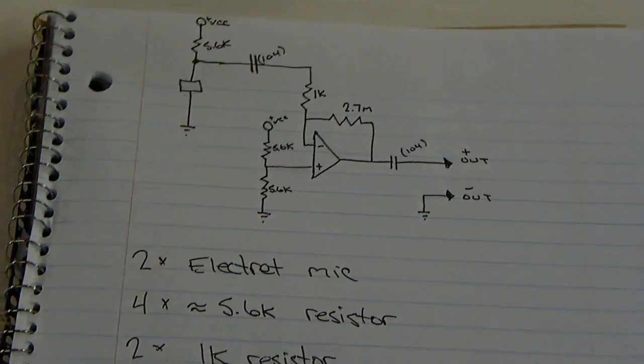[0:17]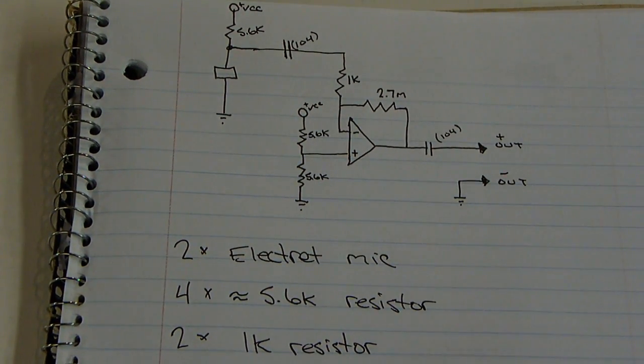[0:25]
Alright, today I'm going to be making a device that I call Stereo Super Ears. This basically is just a device that allows you to hear things that you normally wouldn't hear. This is the schematic, if I can run over it quickly. This is just one half, but the actual device is going to be this times two, since it's stereo.
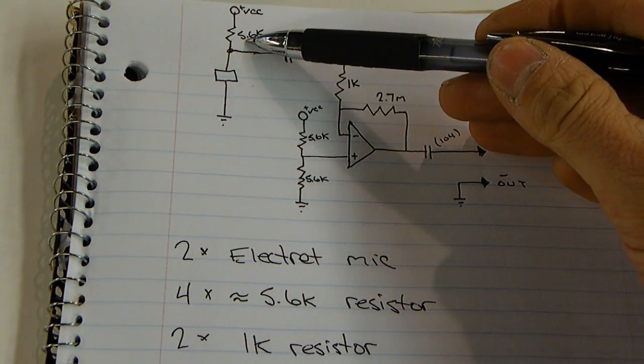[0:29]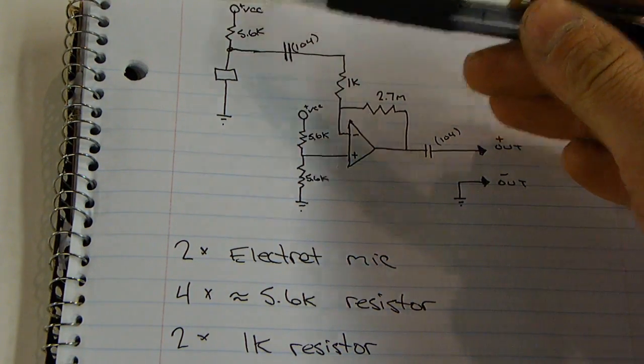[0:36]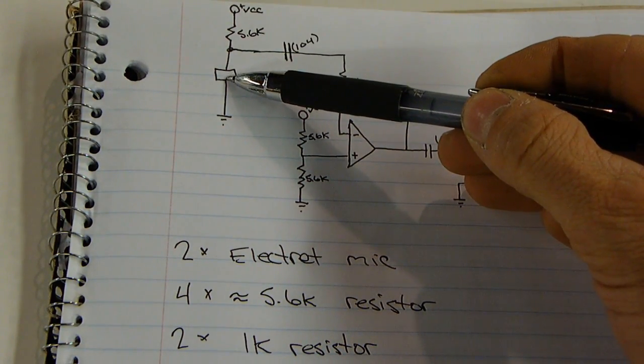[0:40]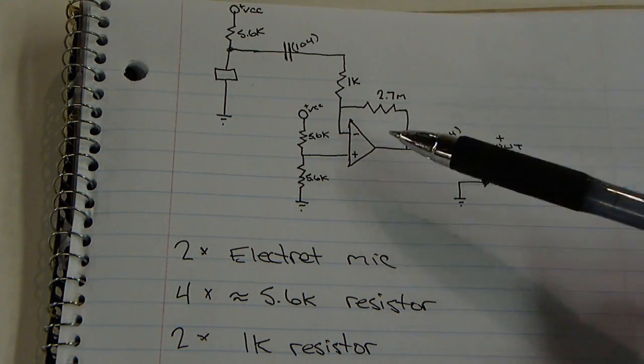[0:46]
Here's how it works. I have a 5.6K resistor. Anytime you see this plus VCC, that means connect to the positive of the battery. That biases this electret mic right here, which goes through this capacitor to filter out any DC. Then it leads to this op amp. The op amp's amplification is determined by this 1K resistor and this 2.7 meg resistor.
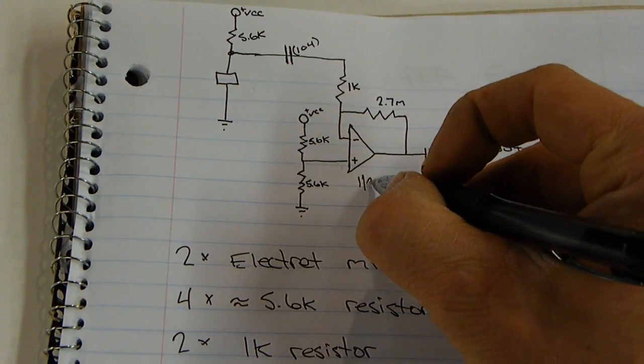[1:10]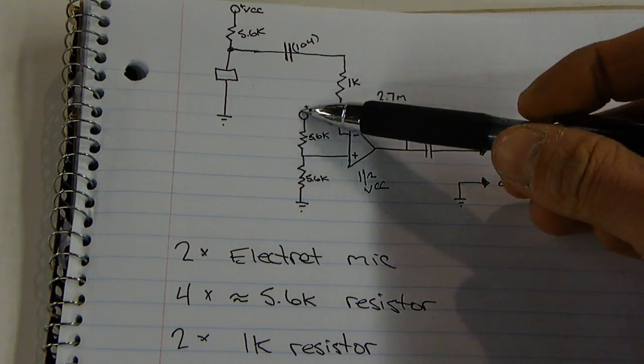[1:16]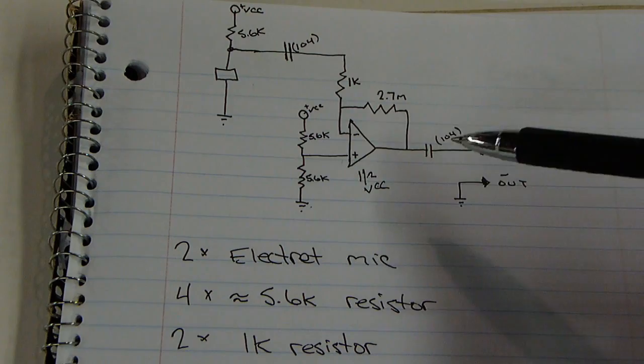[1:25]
This over here is a voltage divider connected to the op amp to give a reference for half the voltage. This coming in here is actually 1/2 VCC because there's two resistors of the same value connected to the positive and to the negative. The middle is going to be half the voltage. That's going to go into this op amp. Don't worry about what the op amp is right now. Out of the op amp, this is out. It goes through this capacitor, which filters out again any DC and just lets the AC come through, and to the headphones.
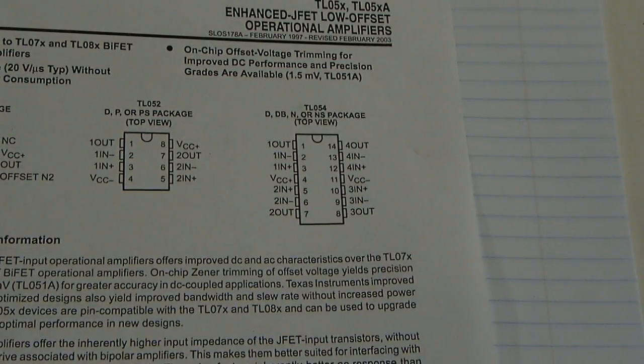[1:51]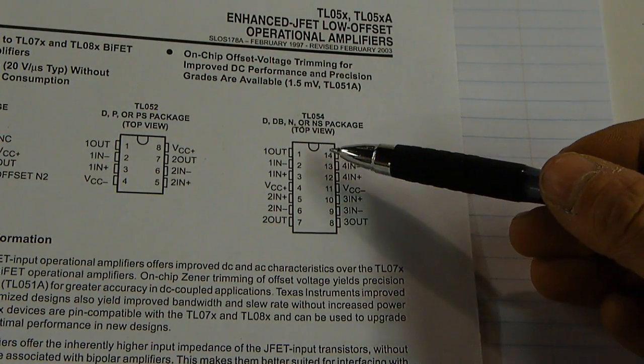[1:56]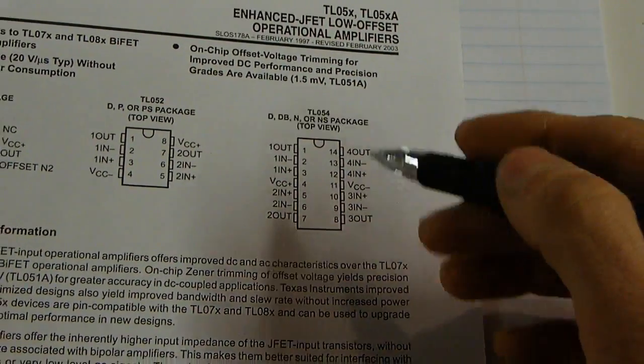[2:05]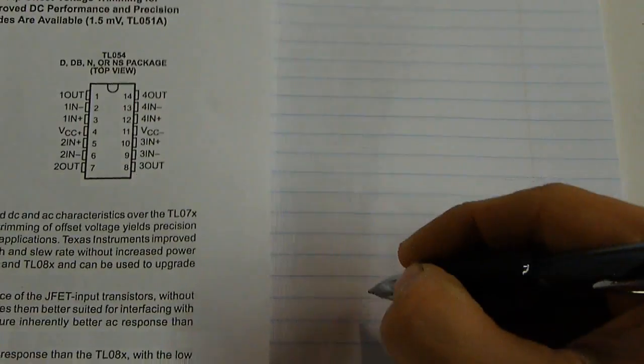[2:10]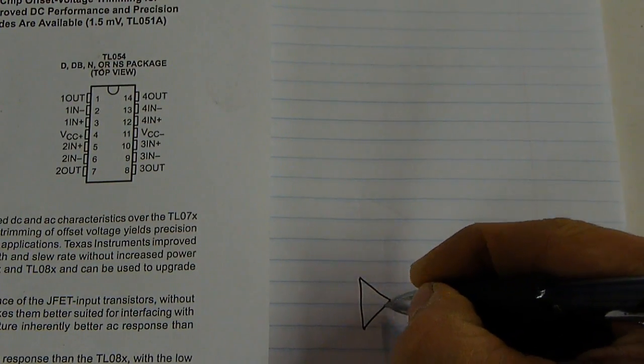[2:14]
Alright, I'd like to talk about the op amp that I'll be using. This is the TL-054, and that's what I have. Any op amp is going to work for you. This isn't one of the most popular ones, but it's the one I have. You'll notice in this particular chip, there's actually four op amps. And one op amp, the symbol for that would be a triangle.
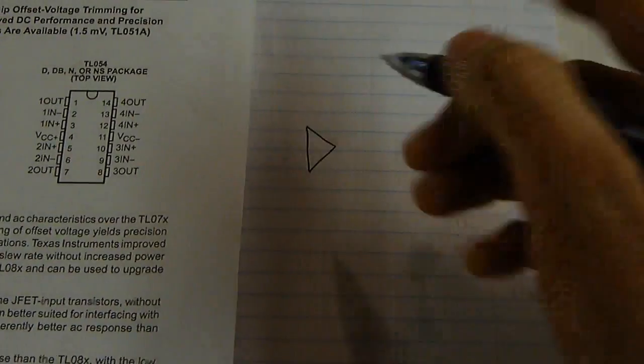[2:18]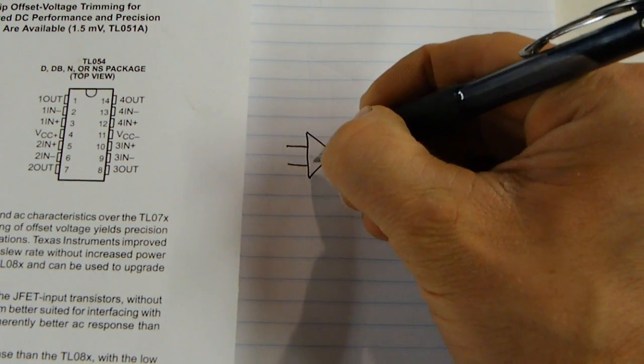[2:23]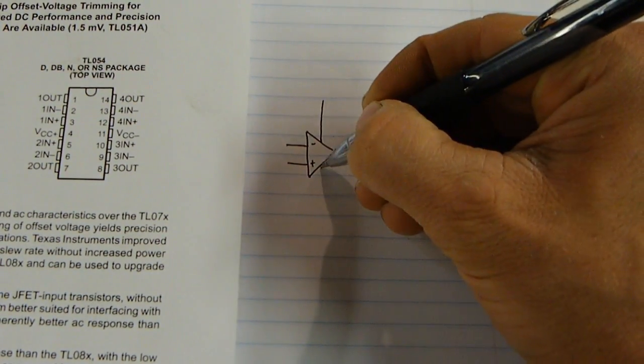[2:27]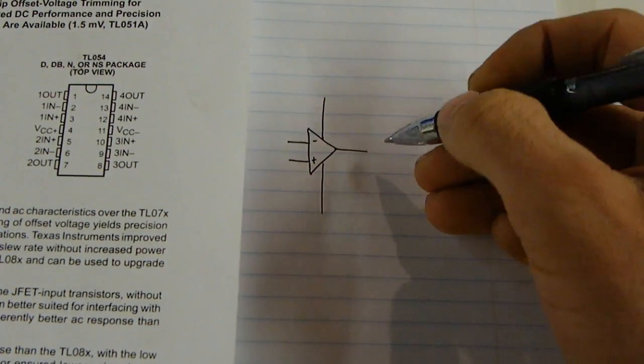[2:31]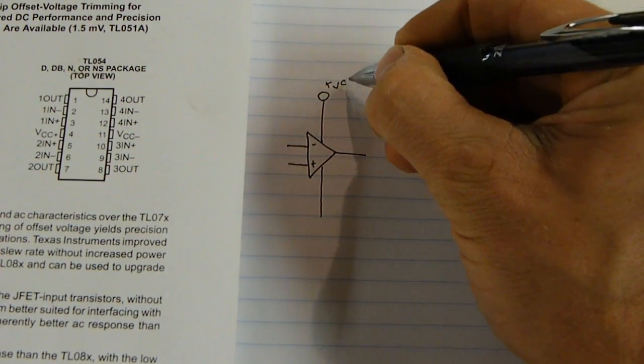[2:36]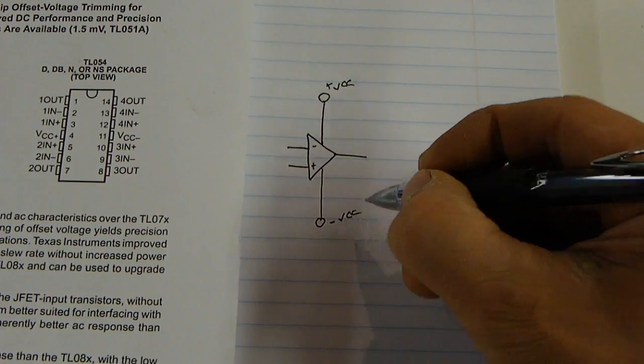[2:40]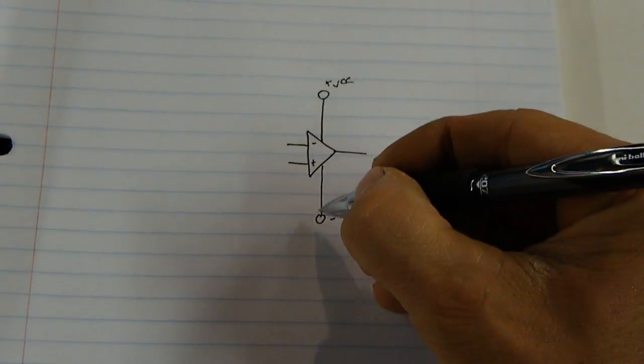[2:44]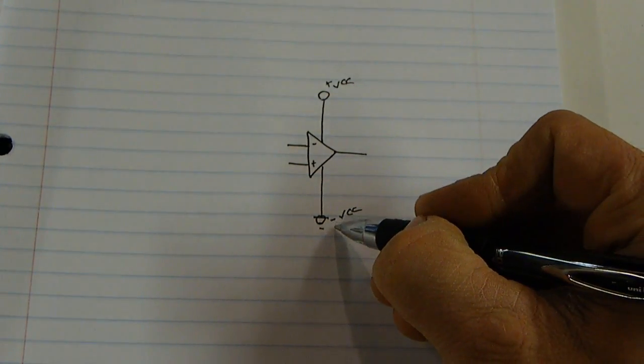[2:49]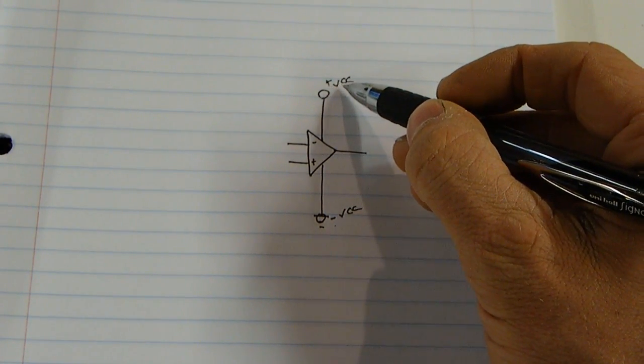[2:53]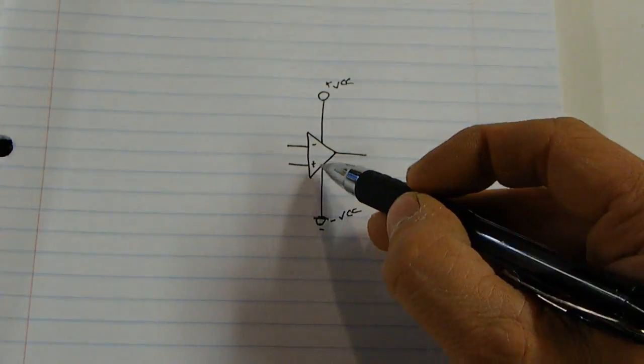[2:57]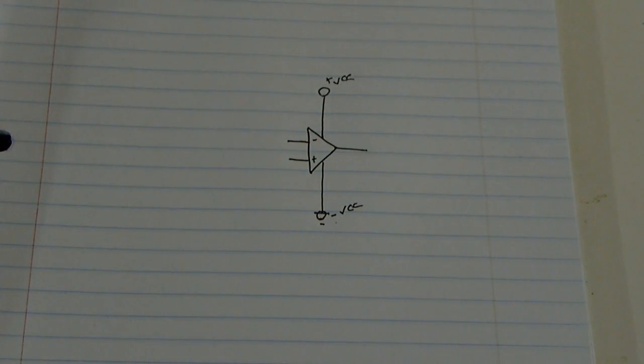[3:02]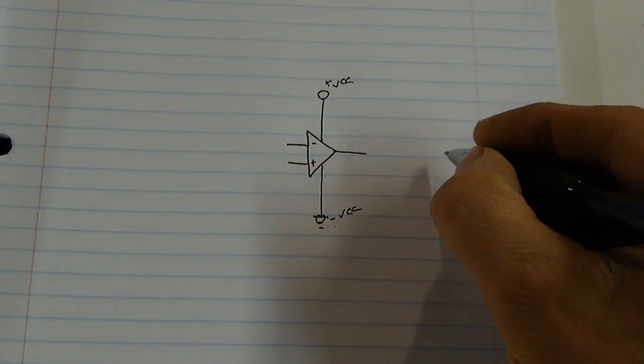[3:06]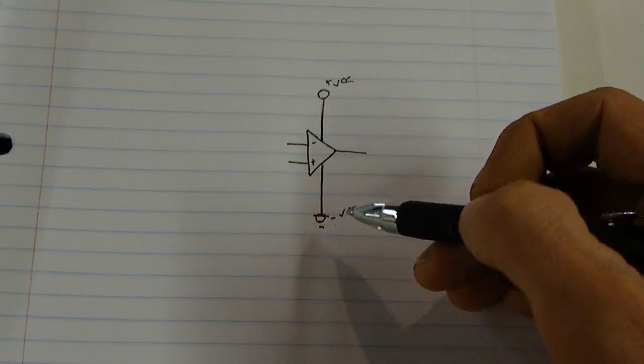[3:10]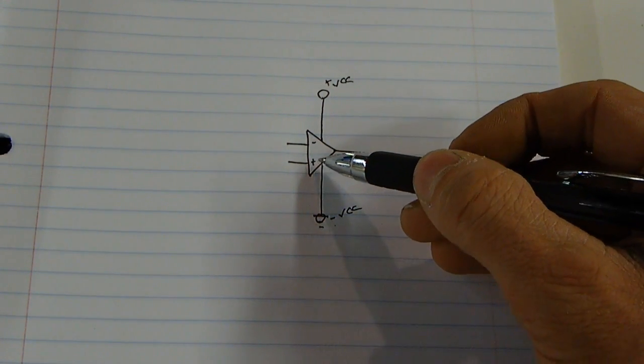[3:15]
Normally, if you're looking at a schematic, you would see something similar to this, something like that, and an output. Output is always this one right here. This one is usually plus VCC, and this is usually minus VCC. However, the way I have mine set up is I'm using a ground here, so this will be connected directly to the negative terminal of the battery, and this is connected directly to the positive terminal of the battery. And the voltage divider across this positive input here allows me to use just a single voltage supply. Normally, there would be a ground and a plus and a minus. But in this case, since I'm using a voltage divider on the positive leg of the input, you need not worry about it. It allows you to use an op amp off of a single power supply source.
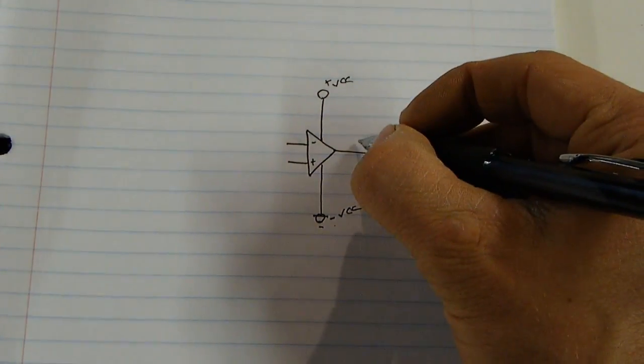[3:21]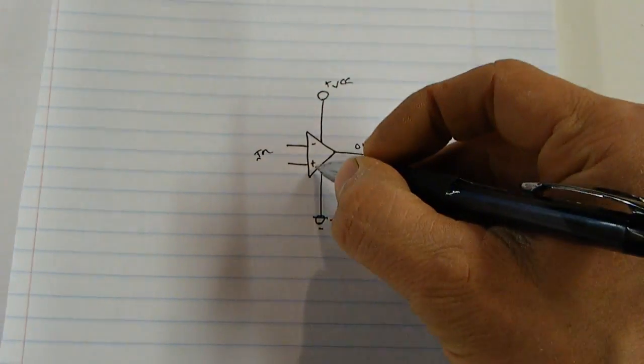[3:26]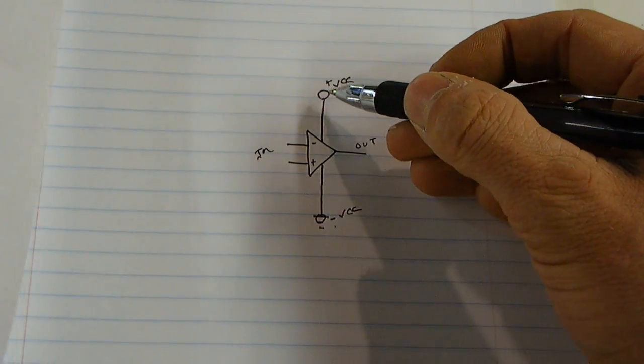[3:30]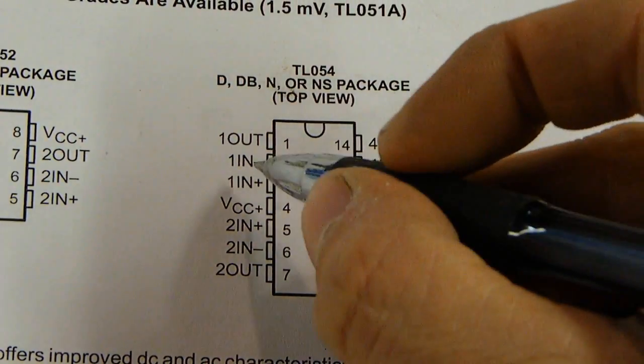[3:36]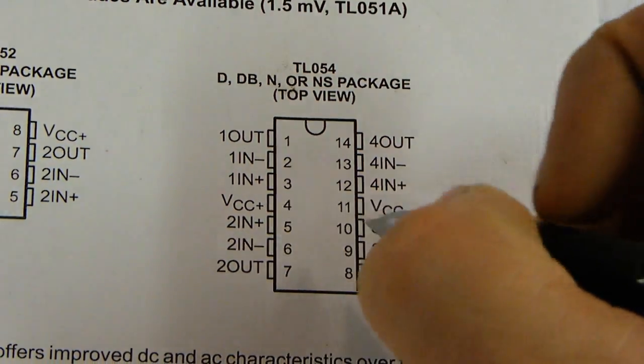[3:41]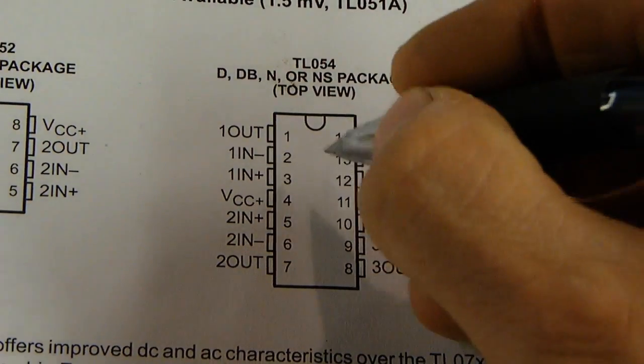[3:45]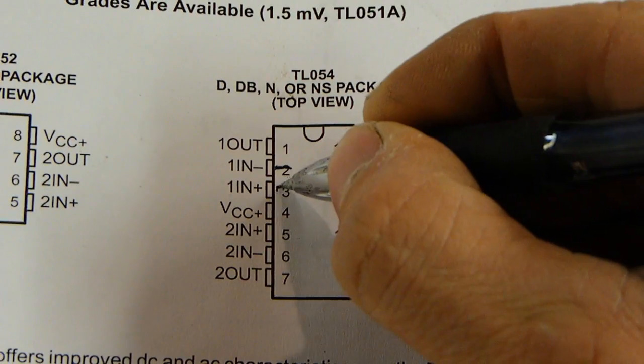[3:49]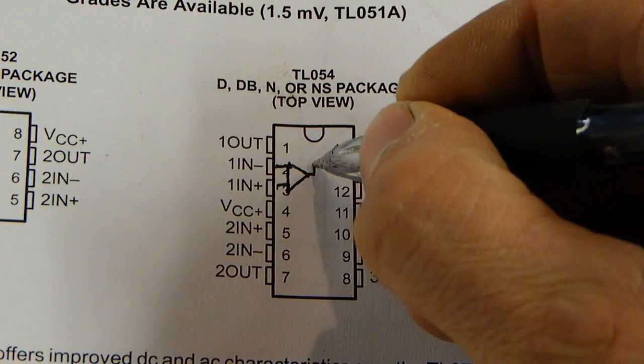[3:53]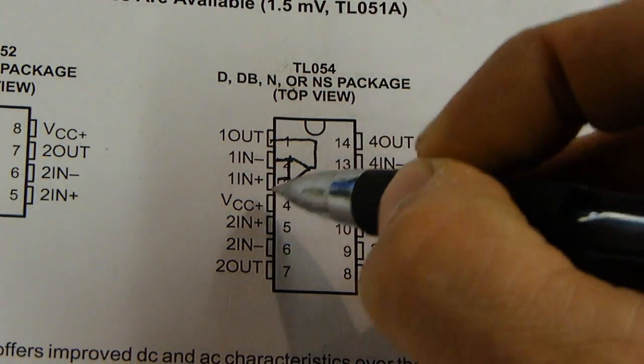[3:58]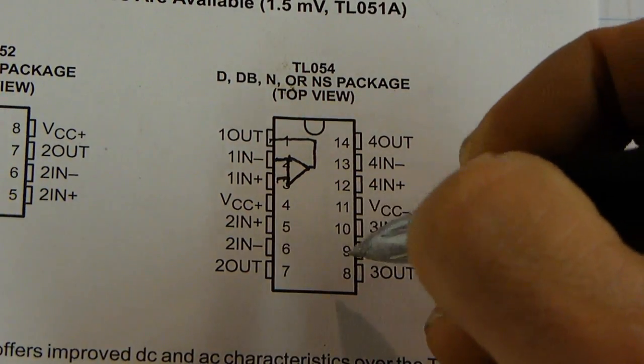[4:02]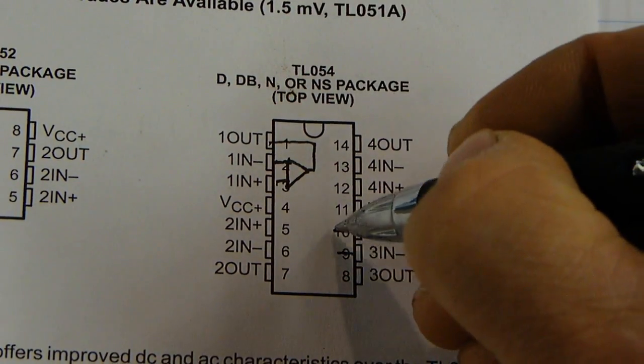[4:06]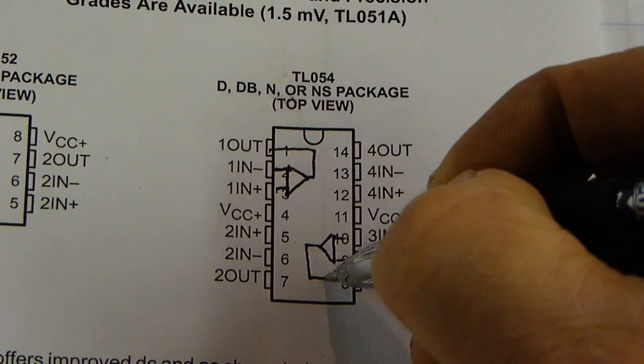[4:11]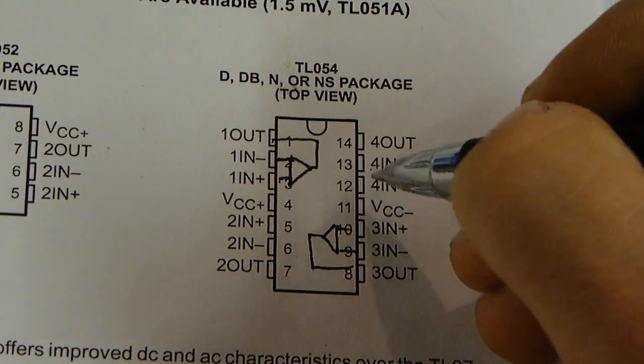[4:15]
So, this is your out. This is your in minus, in positive, battery minus, battery positive. So if you look at this op amp, the one that I'm using in this example, you have an in minus, in plus, a voltage plus, a voltage minus, and an out. You could draw a little schematic inside of this. It would look something like this, a triangle. The output goes up to here, and the positive battery in is right here, negative battery in is right here. So there's actually four of these inside of each one of these op amps. And they look like that. There's one here, up in, and one here.
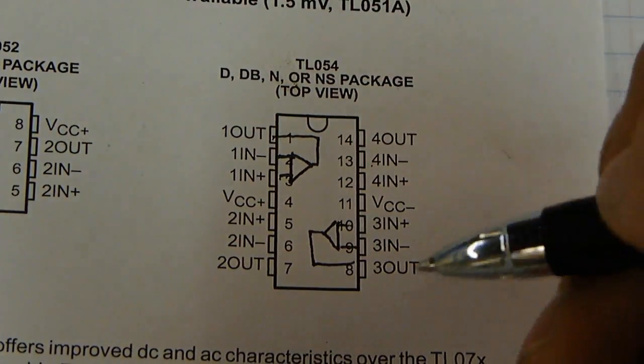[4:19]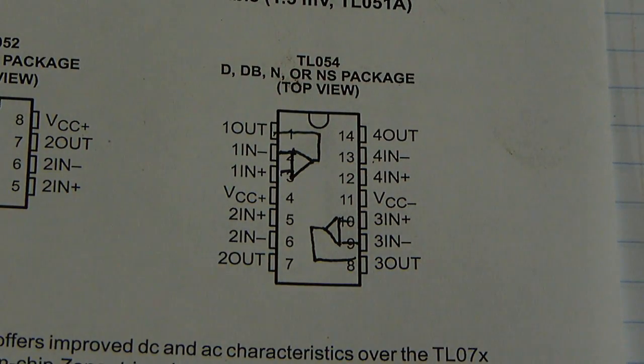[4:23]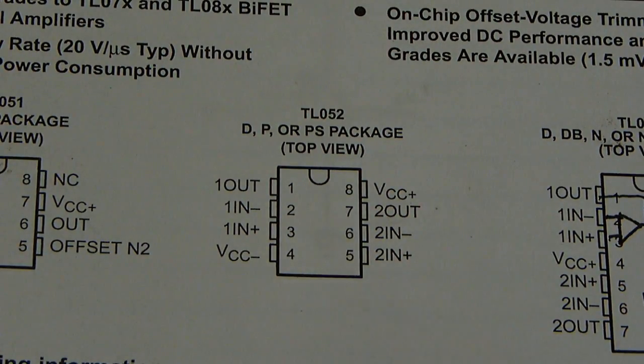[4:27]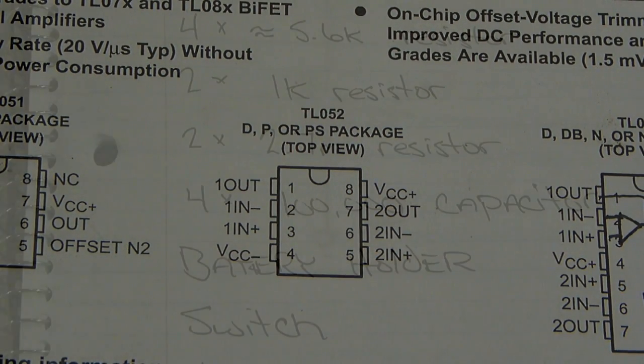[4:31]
So I'm going to end up using two channels out of the four. You can use any channels you wish. And you could use any op amp you wish. Some op amps only look like this, and they have two. This would actually be perfect for this project, but I don't have any. So on to the parts list.
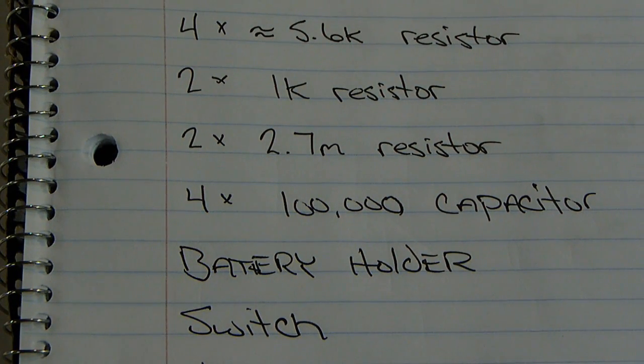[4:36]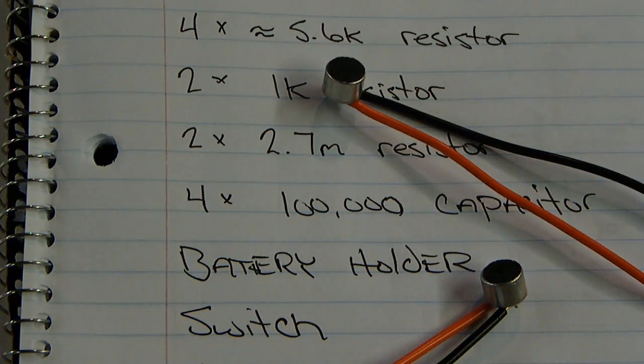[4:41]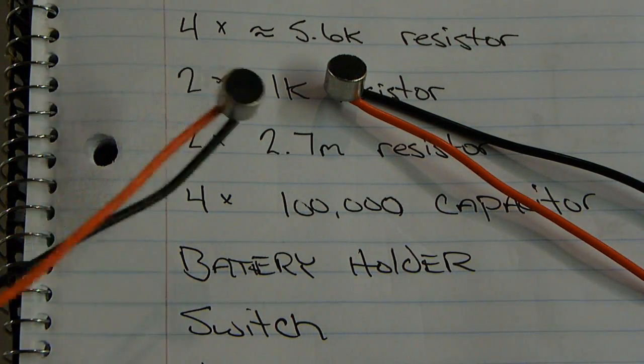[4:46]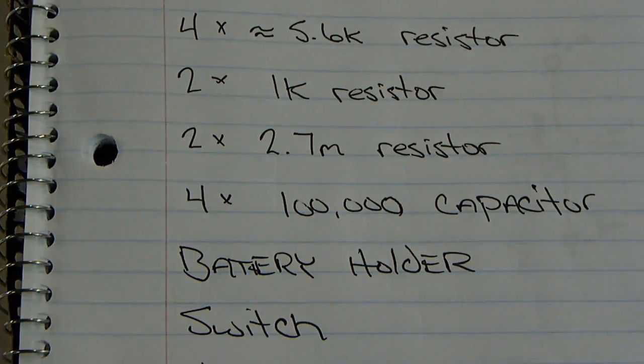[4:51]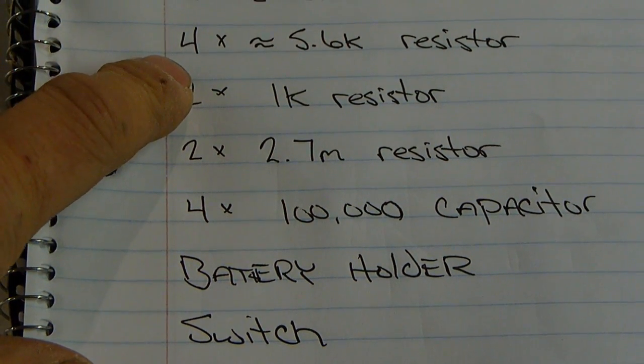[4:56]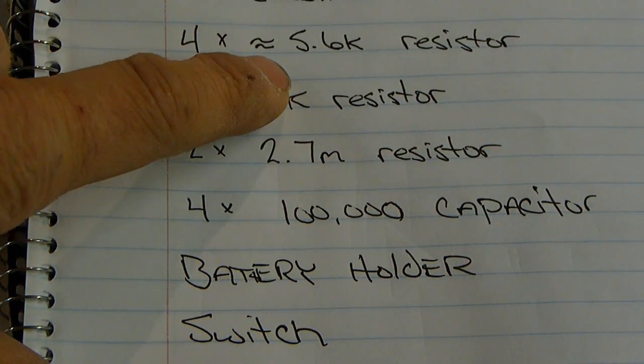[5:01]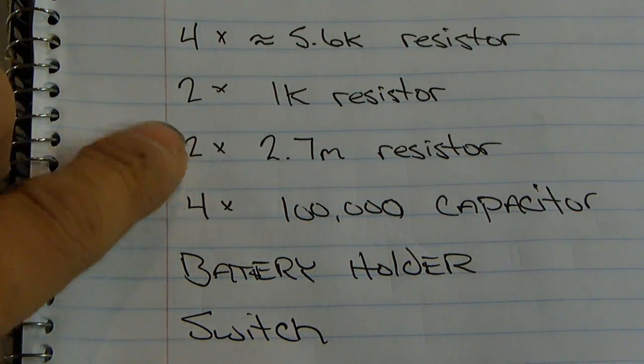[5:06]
I have two electret microphones. You can probably pick these up at Radio Shack. If not, you can definitely get them on eBay or salvage them out of old cassette radios that used to record your voice. Additionally, I'm going to have approximately 5.6K resistors. This isn't important as long as it's close to 5K and they're all the same. That's what matters. Two 1K resistors, again, not important as long as they're real close to 1K.
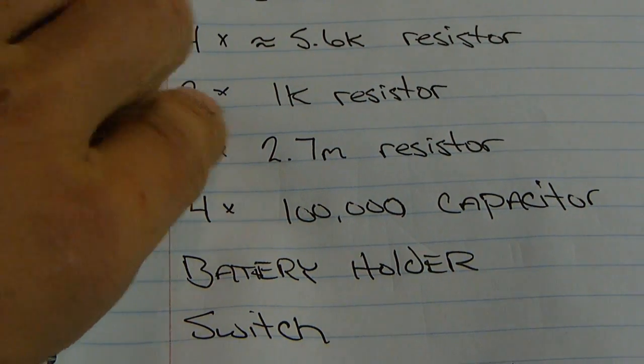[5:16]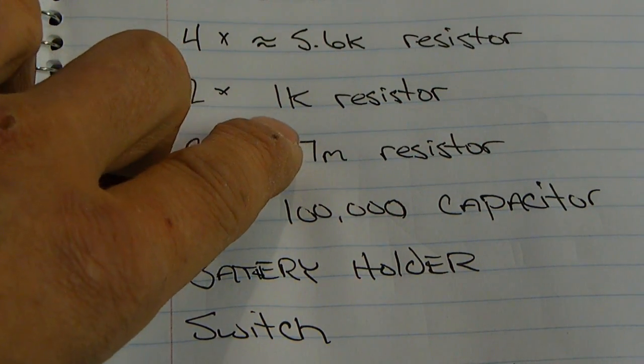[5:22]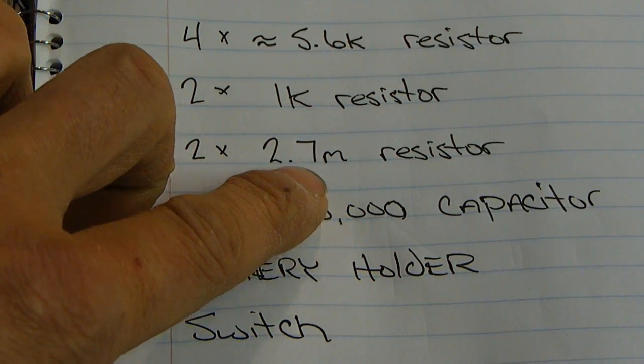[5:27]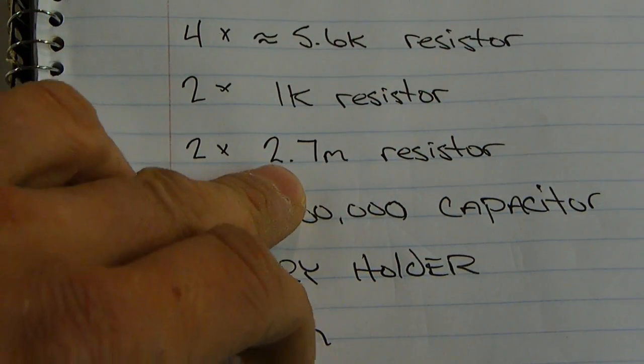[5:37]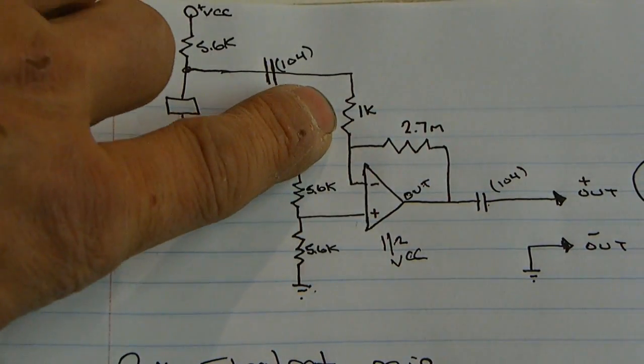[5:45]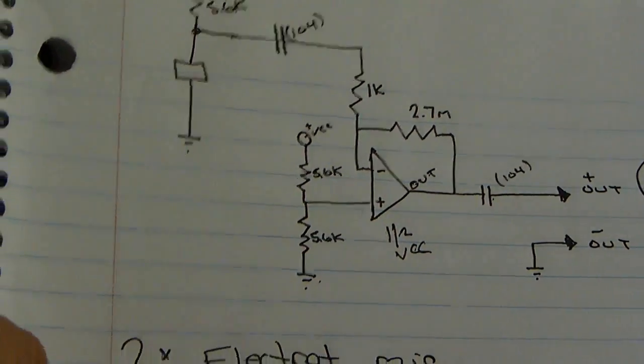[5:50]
It's going to affect your amplification, but you can probably use something just a little bit smaller, a little bit higher. Two times 2.7M resistors. This you could use probably anywhere from 1 to 2.7 mega ohms. The reason is, this is basically your sensitivity knob right here. The higher the resistance, the more amplification you're going to get. Because the op amp actually uses the relationship between this 1K and this 2.7 meg to determine the amplification.
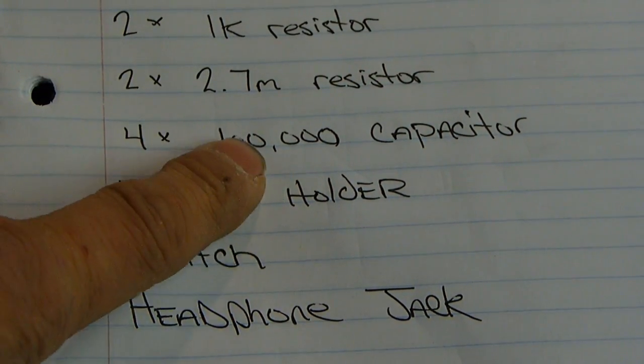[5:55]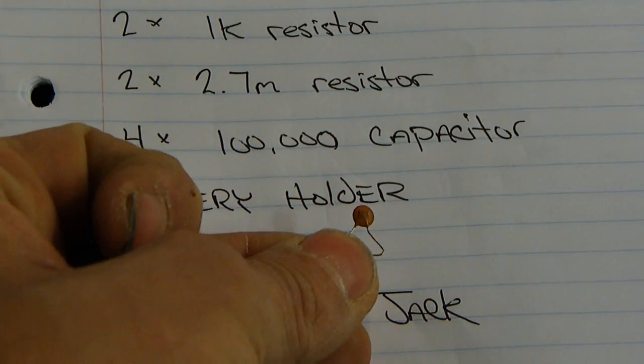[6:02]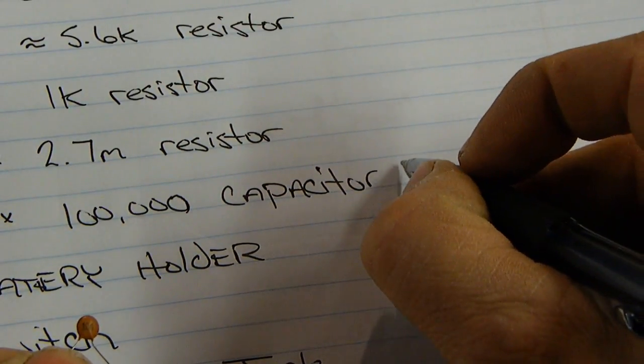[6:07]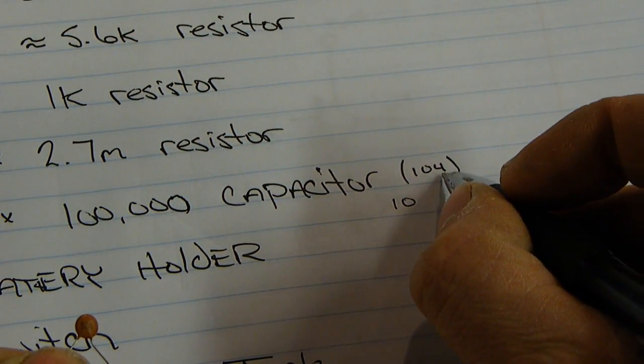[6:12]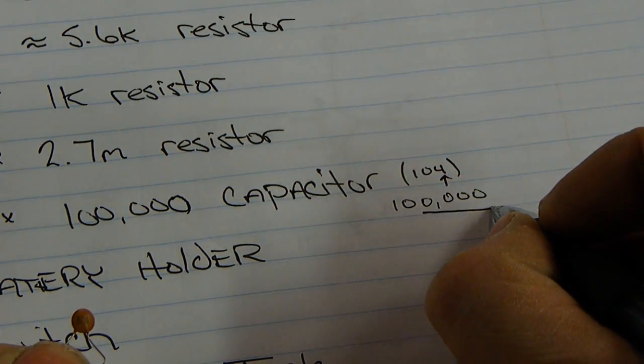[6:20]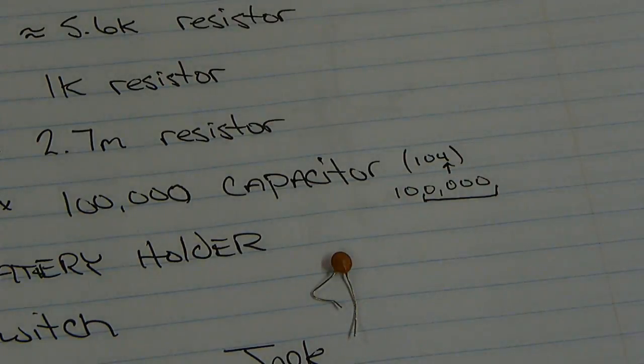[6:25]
Moving on, 4 times 100,000 picofarad capacitors. That's a 104. You might not be able to see it. It says 104. And that's the code for 100,000 picofarads. It's actually a 10 with 4, the third number being how many zeros to add after 10. So 1, 2, 3, 4. Thus 104. Additionally, I keep handy a list of the conversions.
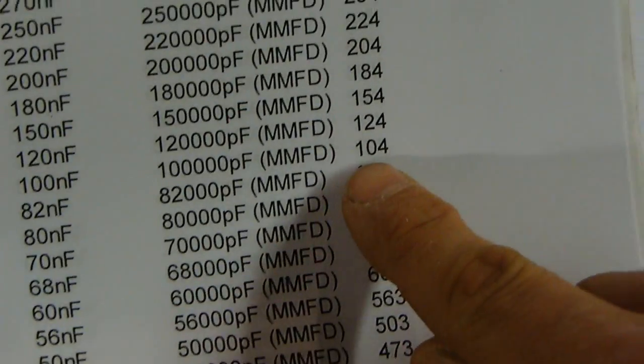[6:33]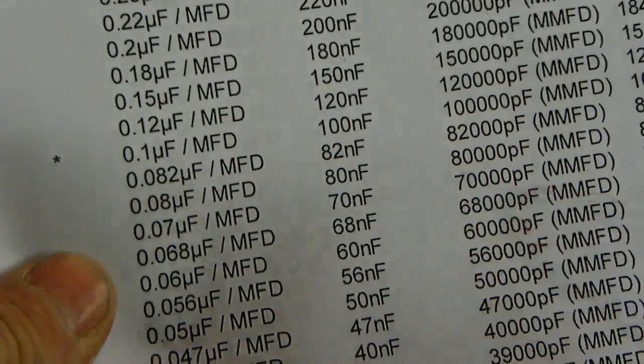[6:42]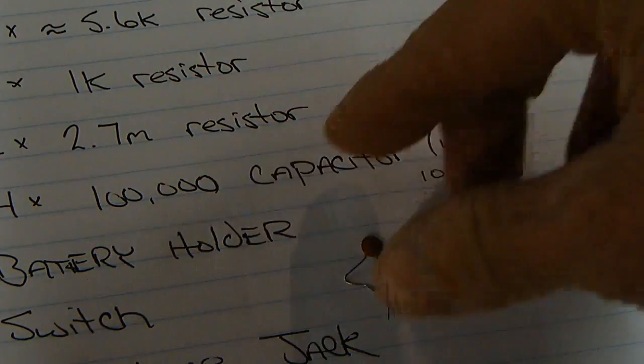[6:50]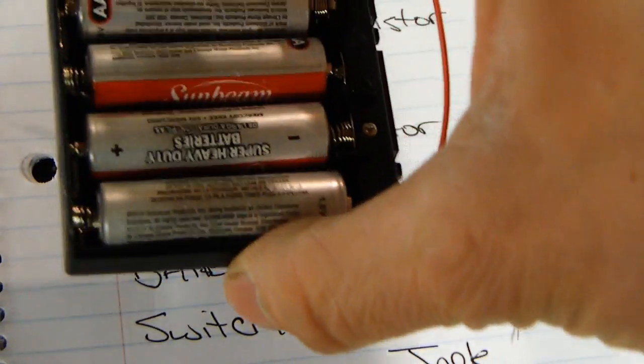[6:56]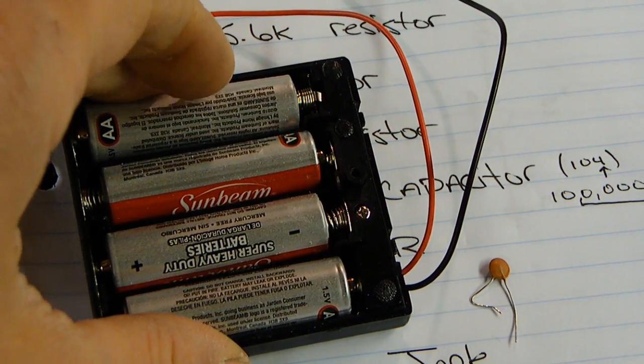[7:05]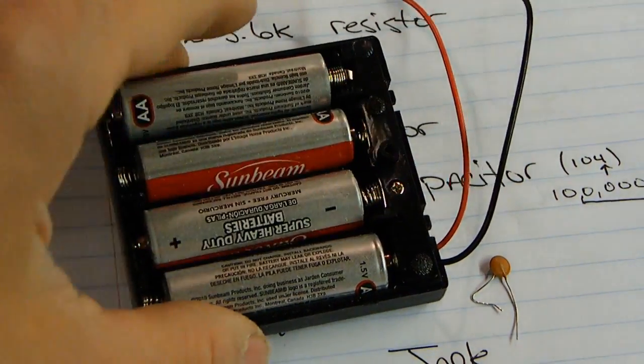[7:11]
So for instance, if I was looking up a 104, that's the code. That's 100,000 picofarads. It's the same as 100 nanofarads, or you could use a 0.1 microfarad. That comes in handy, even though I could do the conversions, because it's just 10 to the minus 6, but I like visuals. Then I have a battery holder. 6 volt, it's important. With 4.5, you'll get a little bit of amplification, not as much as you'd like. With 2, you're going to get very, very little amplification and a lot of distortion. 4 batteries, 6 volt, that's important for this circuit.
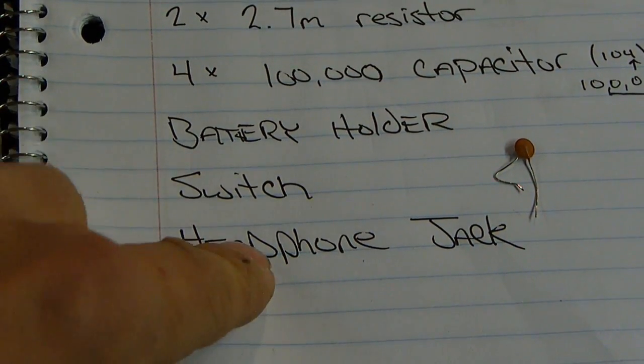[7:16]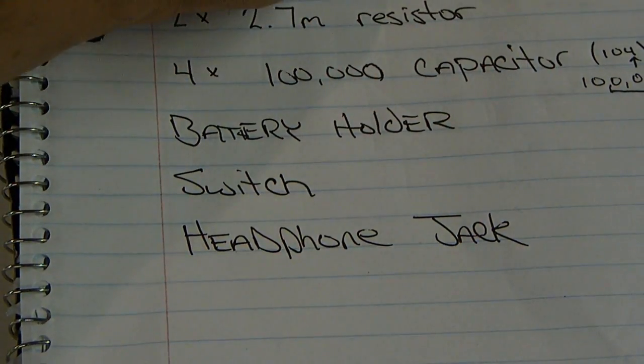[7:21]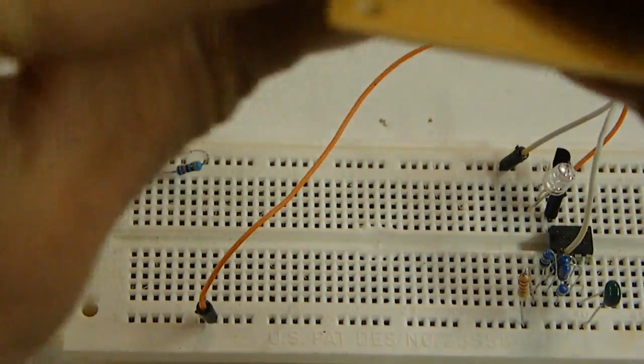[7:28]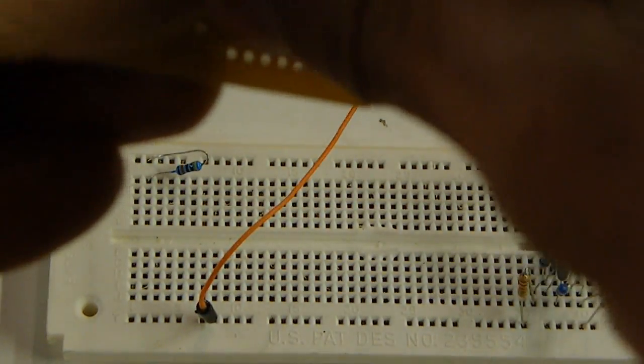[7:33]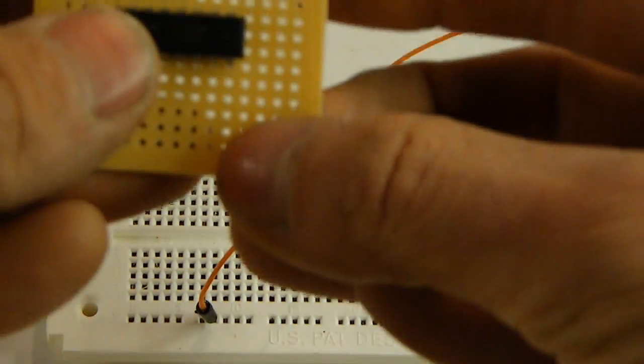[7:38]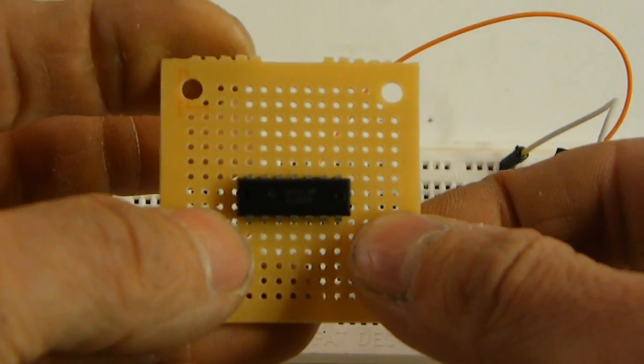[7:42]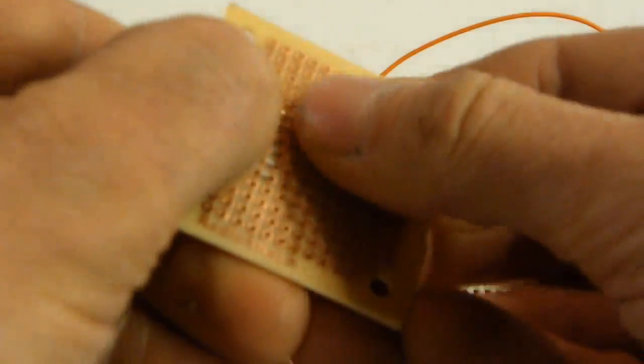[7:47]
Switch, optional, obviously, headphone jack, that's all cosmetic. You could hardwire something in, but I'm going to use a headphone jack since this is going to be a permanent project. So my first step is to go ahead and place the op amp. I'm just going to center it on the board. I'm going to try and keep everything symmetrical since it's going to be a stereo device. So I can count my holes 1, 2, 3, 4 on each side of the op amp. The pins that are sticking through, just bend them over to stay in place.
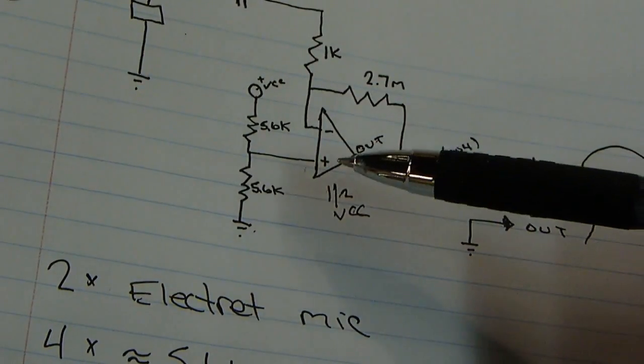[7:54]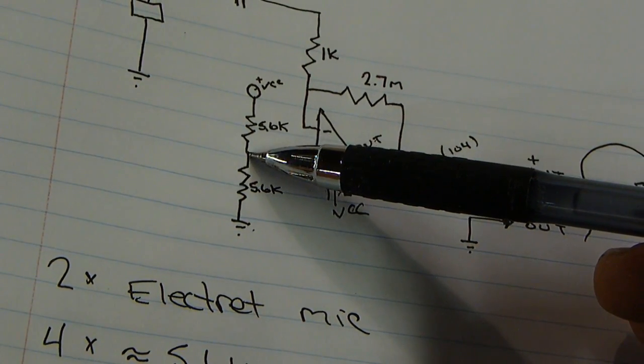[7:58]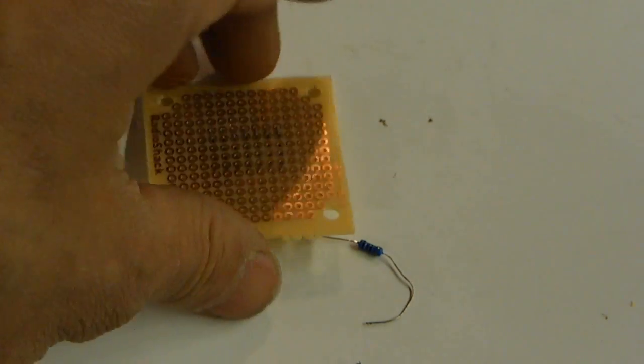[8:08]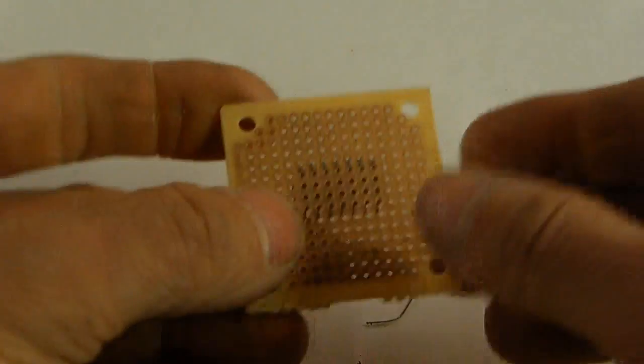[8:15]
The first thing I'd like to work on specifically is that the positive input for each op amp has exactly half the voltage going to it through this resistor divider. So I have my two 5.6K resistors. First thing I'm going to do is solder those onto the board, and then I'll solder a wire from the middle of these to the positive of the op amp.
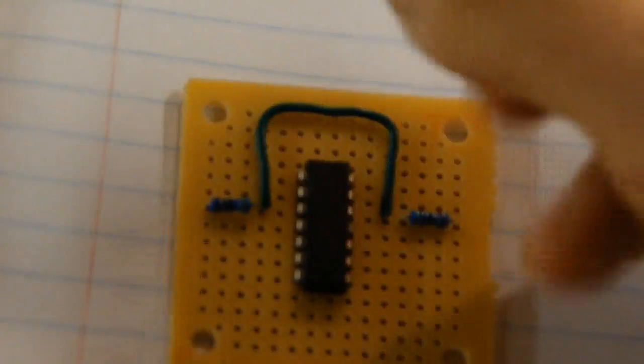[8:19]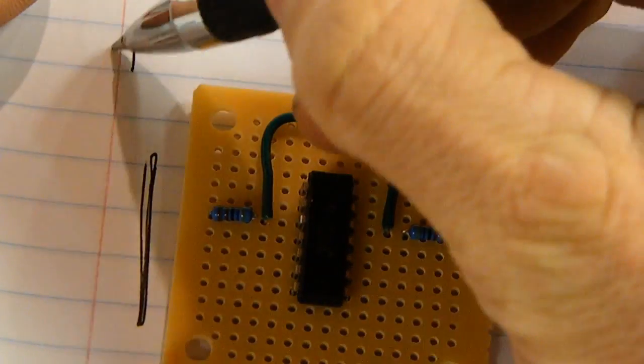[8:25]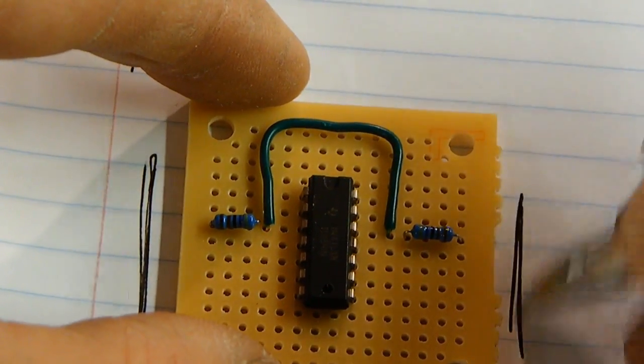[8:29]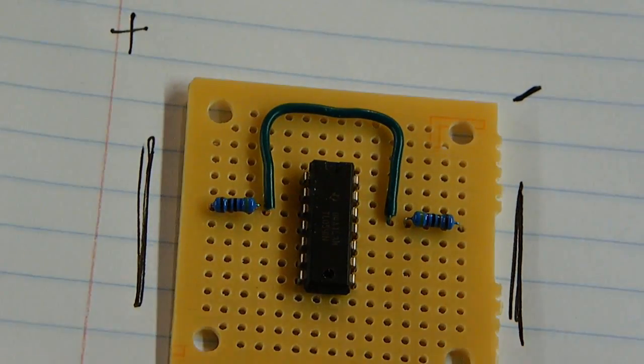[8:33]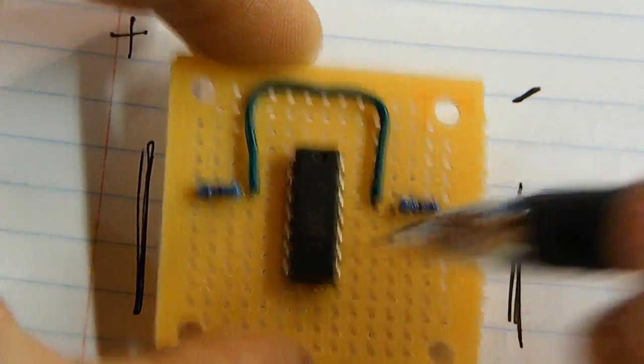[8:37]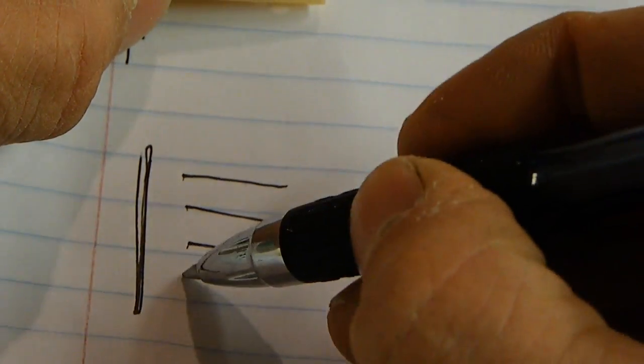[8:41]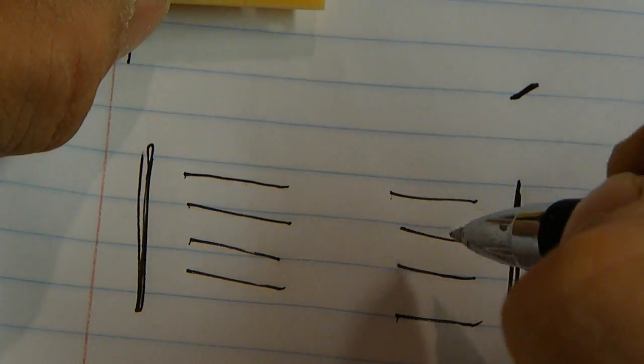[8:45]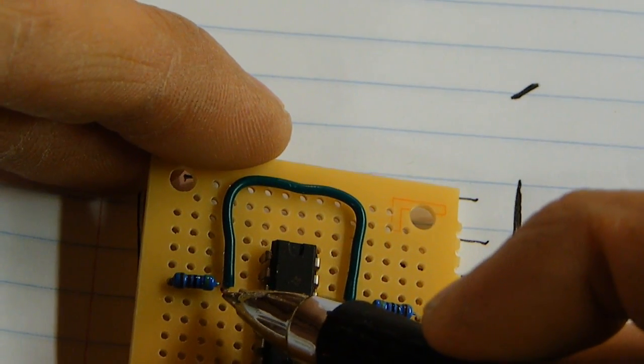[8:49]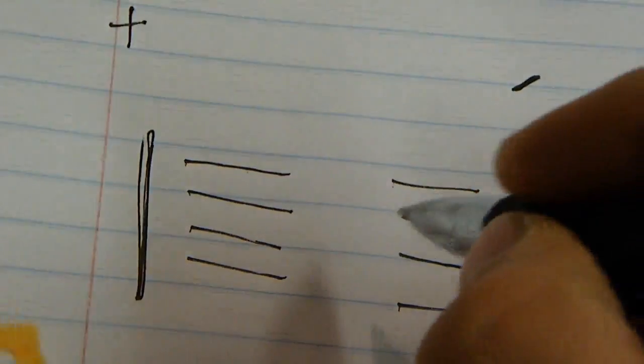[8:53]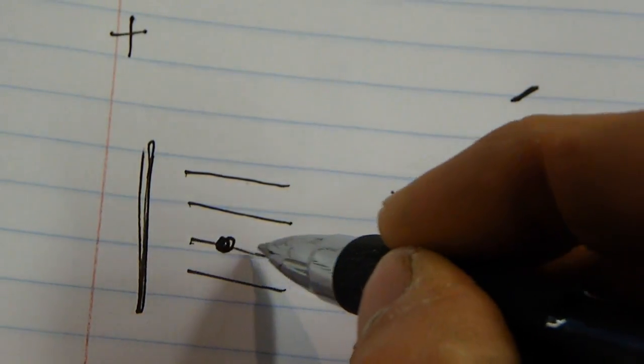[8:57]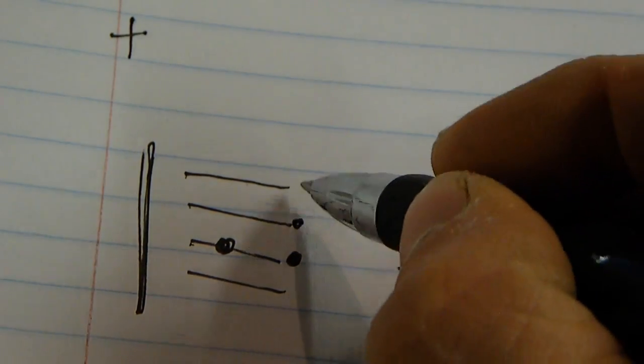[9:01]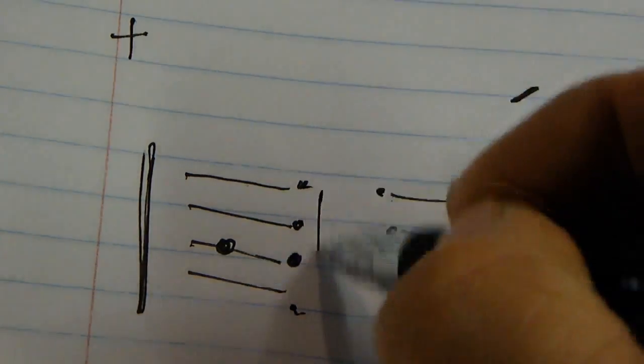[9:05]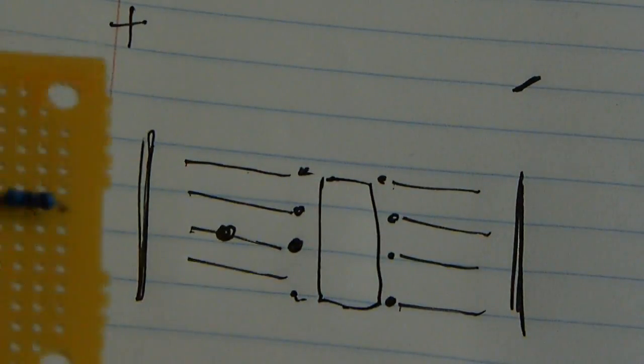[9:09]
What I've done here is I've chosen this rail, meaning all these holes on the left side, to be the positive rail for my voltage source, and all the holes on this side to be my negative. And all these holes this way are actually going to be lined up like a breadboard, like so. So if I were to stick a resistor here, then that would actually lead to this third pin. For instance, if the resistor came through on this hole, I'd know that all these holes that line up are supposed to go to this third pin on the IC. This would be the IC in the middle. And that's the logic that I'm going to use here.
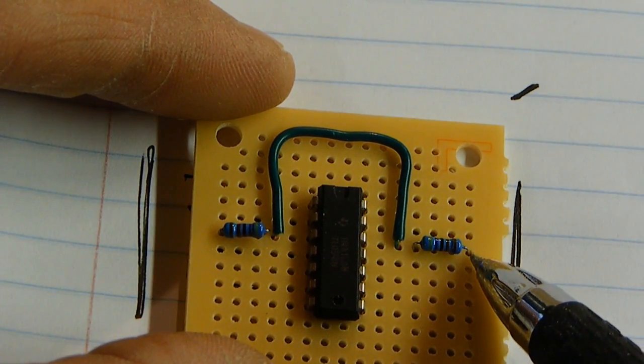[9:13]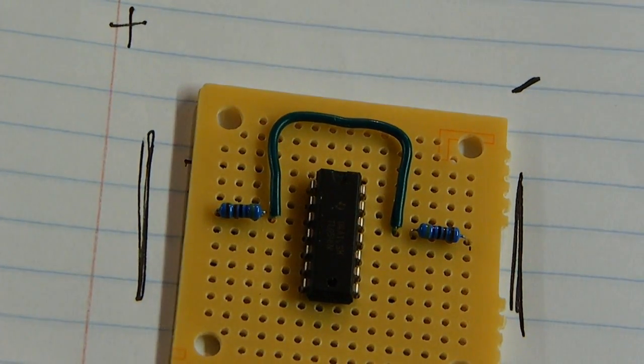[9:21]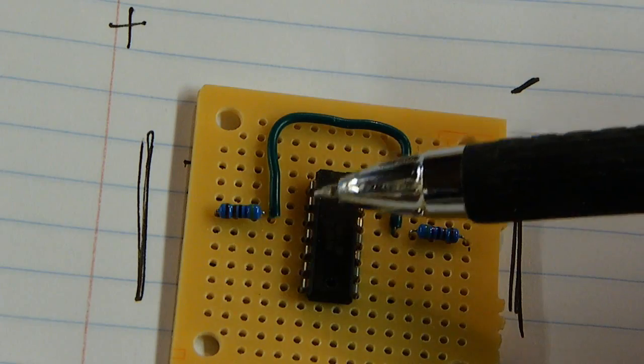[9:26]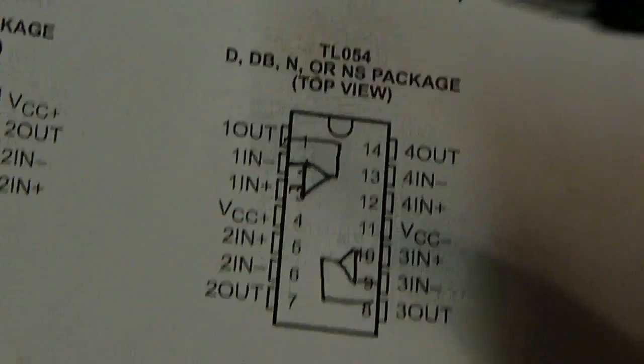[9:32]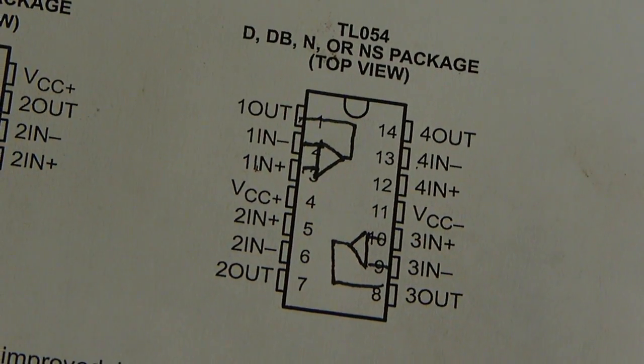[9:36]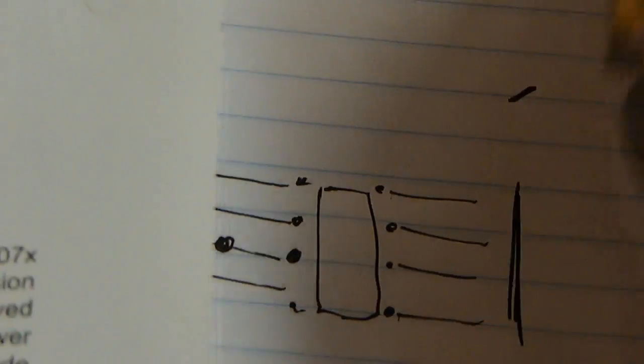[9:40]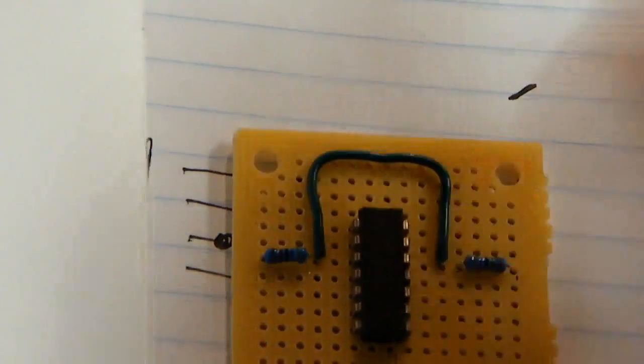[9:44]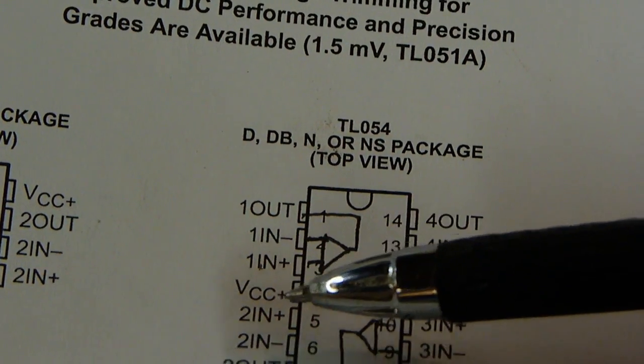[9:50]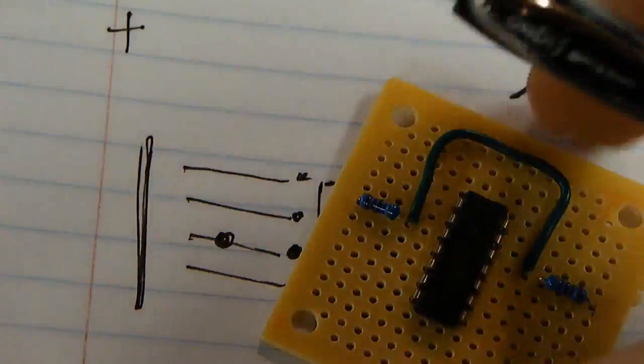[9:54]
You can see my resistor divider now from the negative. Here's the middle of the resistor divider, and this is going to be the positive rail. Now I'm just going to use the op amps on the left side of this board, being channels 1 and channels 2 on the schematic. So the stuff that you see over here isn't going to connect to this side. The only thing that's going to connect is the negative rail. I chose this side to be the positive since this side is naturally the positive end, and that'll help me differentiate which side is which when I'm building it.
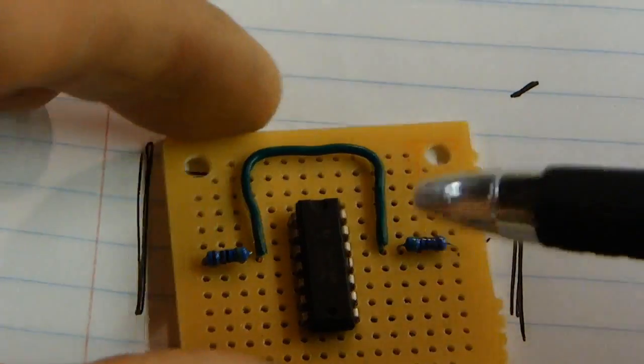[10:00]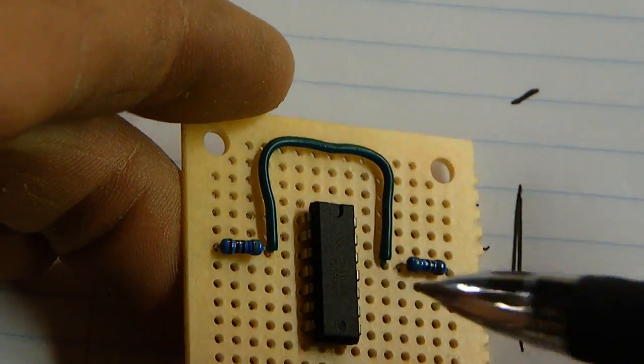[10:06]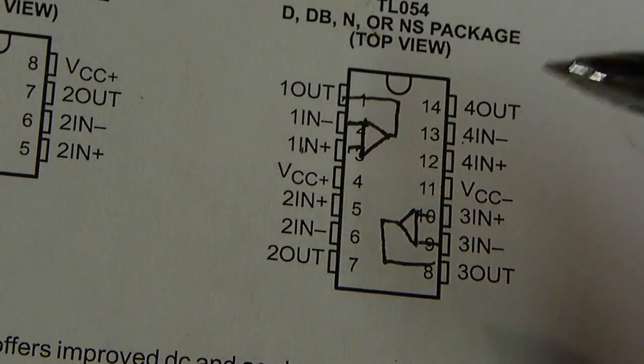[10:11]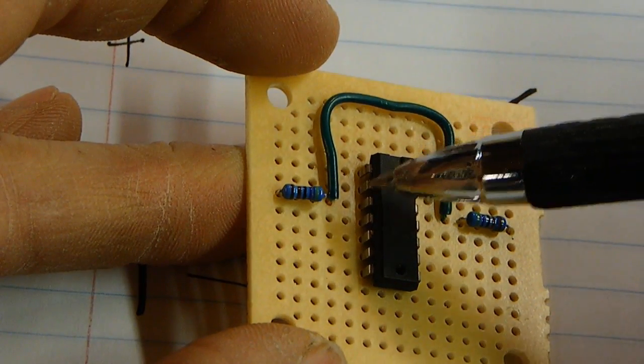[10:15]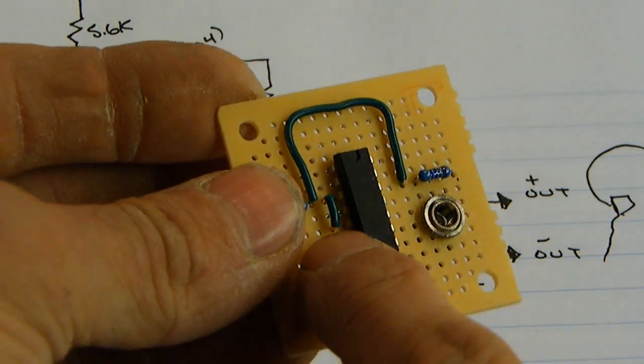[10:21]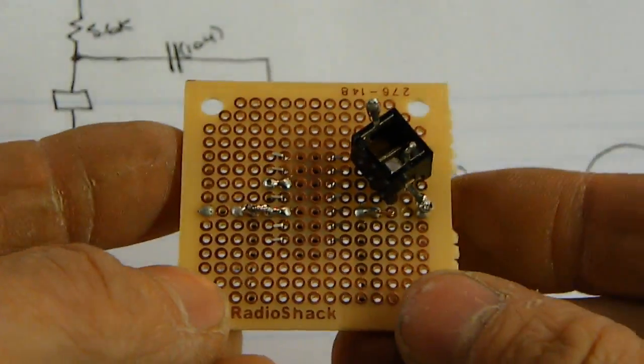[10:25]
I have my voltage divider, and it's going to lead to pin 3 here. However, I also want it to lead to the positive rail on this second op amp. We can see on the schematic that that's pin 5. So I'll have to take a wire from pin 3 and connect it to pin 5. I have the wire here connecting the two pins 3 and 5. I went ahead and soldered that on.
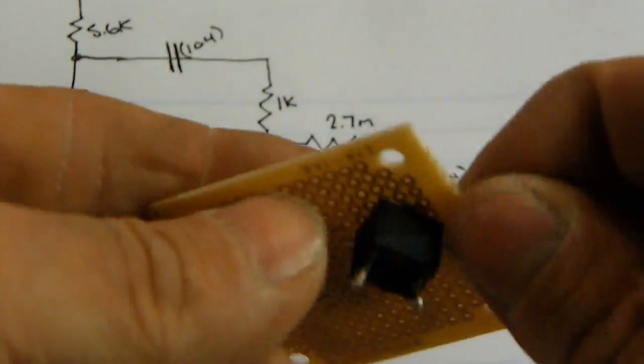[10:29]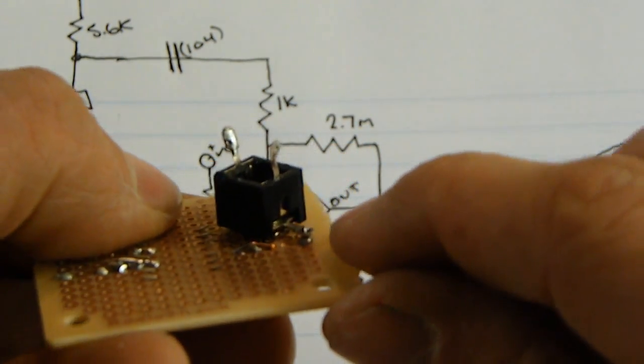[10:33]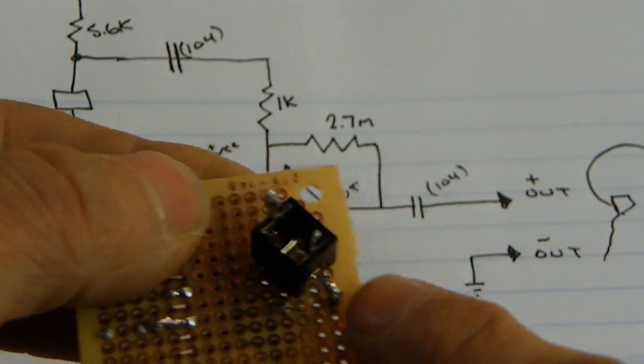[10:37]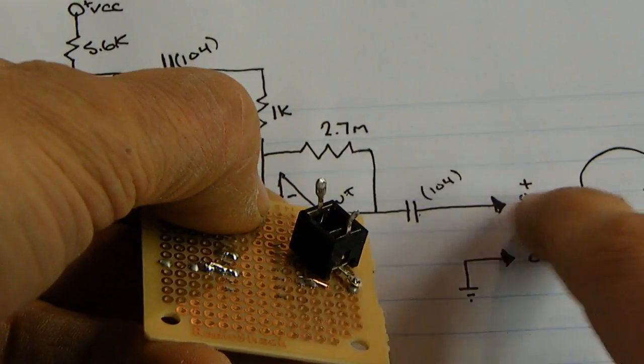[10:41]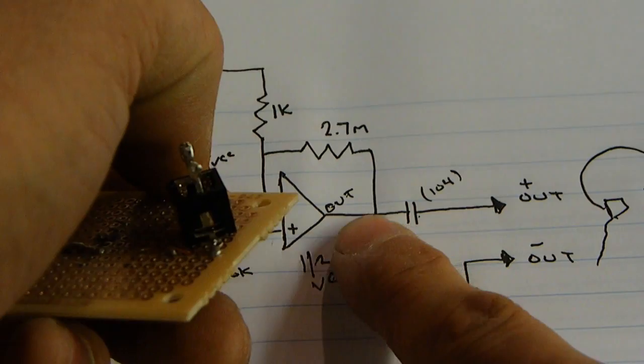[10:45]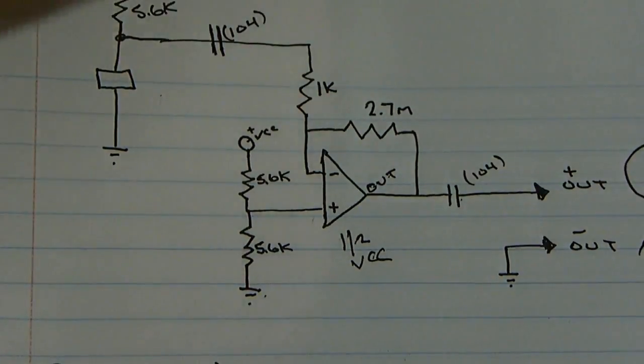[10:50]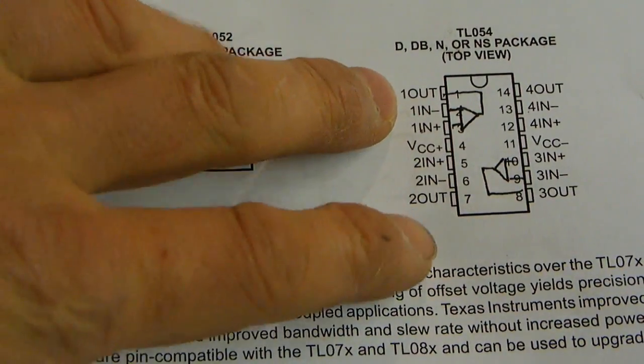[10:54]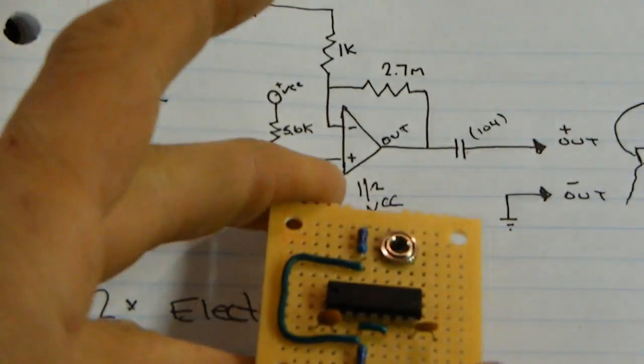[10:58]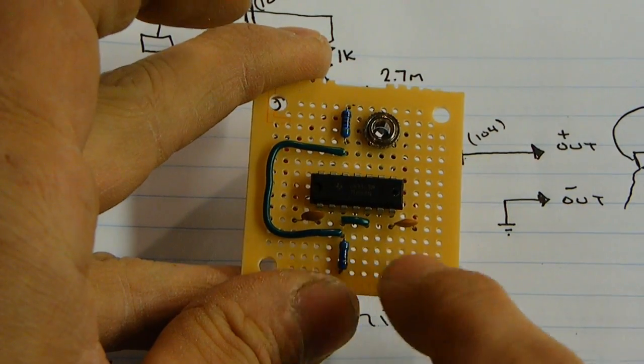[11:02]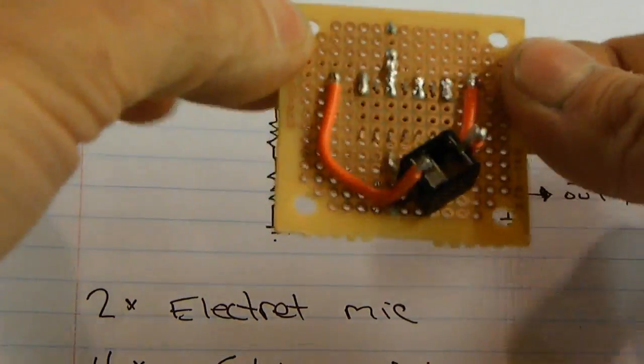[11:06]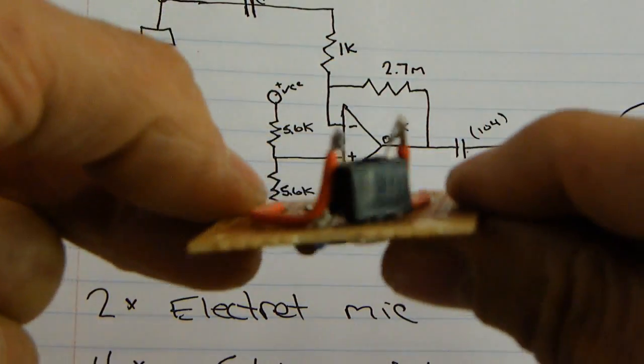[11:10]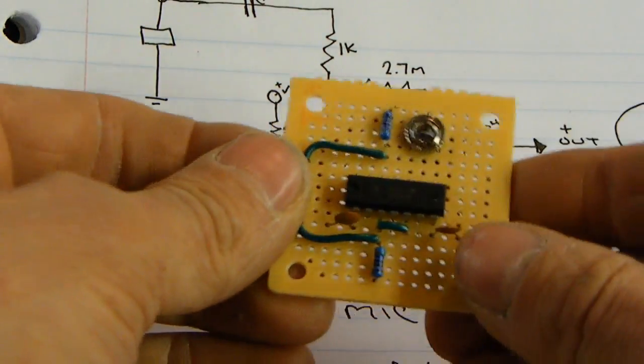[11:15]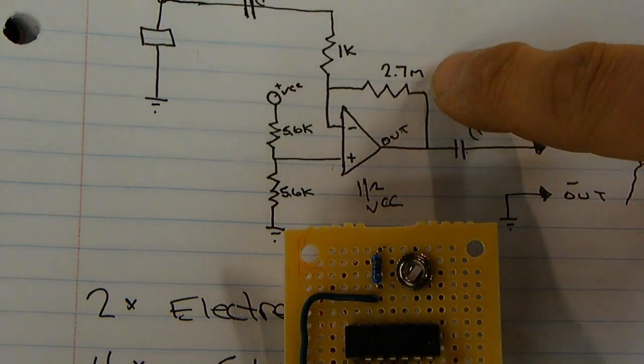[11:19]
And I drilled a hole now for the headphone jack. I made it to where the negative on the headphone jack is going to be touching the negative rail as per the schematic. And then I'll probably solder the two capacitors on right to the output pins, which in this example are pin number 1 and pin number 2. Okay, I have the capacitors from the output pins, 1 and 7. And they go out to these red wires, which lead to the left and right channels on the headphone jack.
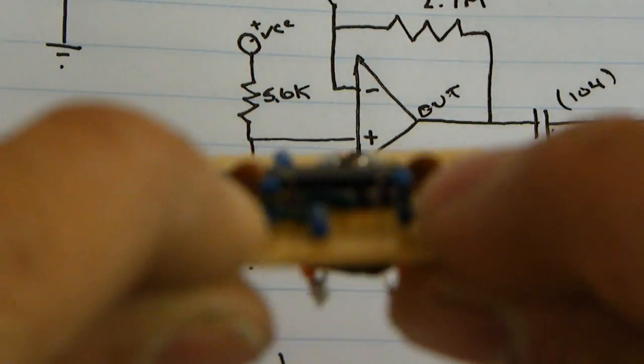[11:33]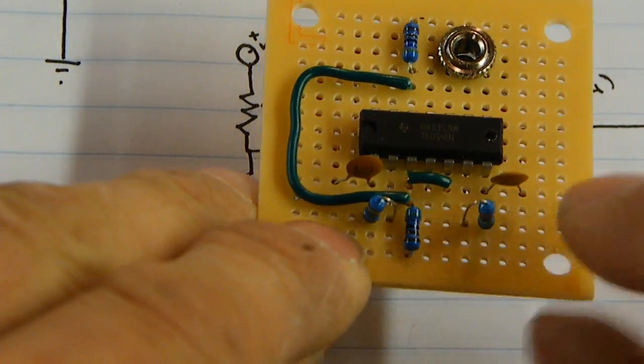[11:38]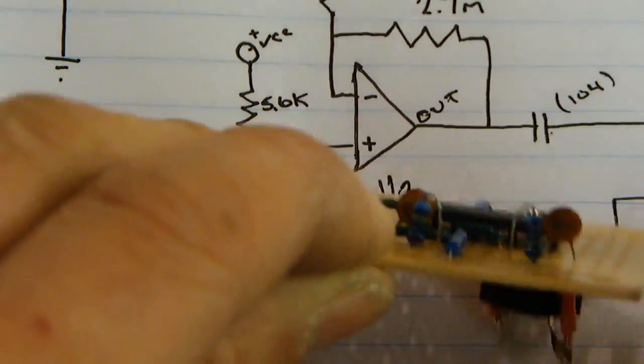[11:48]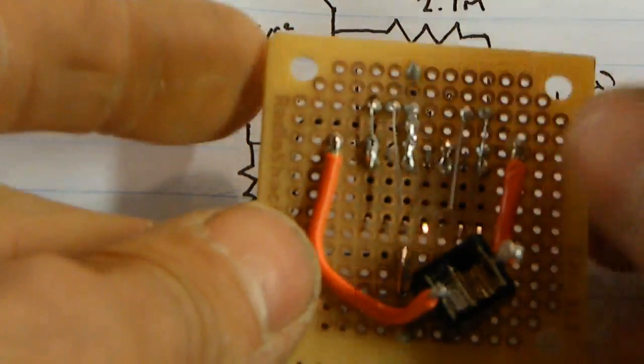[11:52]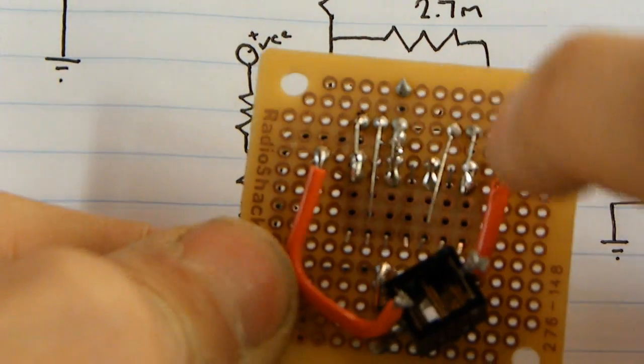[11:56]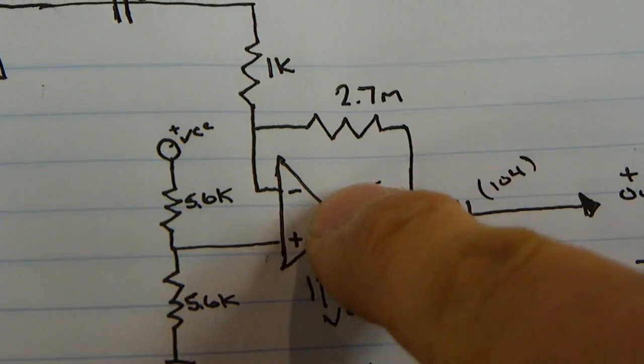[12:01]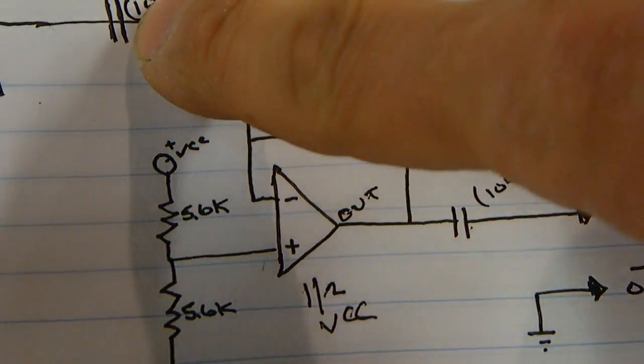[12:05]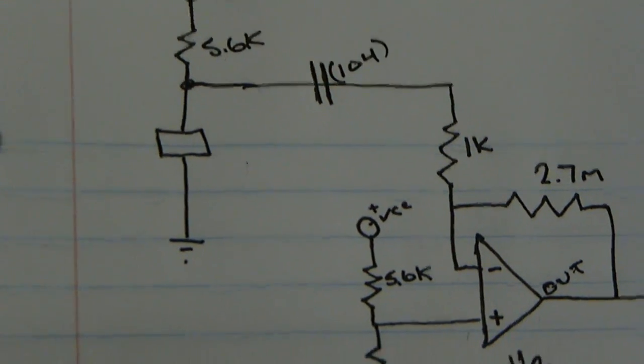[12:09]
Next step, I think, is I'm going to take the 2.7 megaohm resistors, these guys, and attach them from the output pin of the op amp to the negative in. Okay, you can see the two 2.7 megaohm resistors here and here, and those go from the output pins, 1 and 7, to the negative input pins on the op amp. In my case, it's pins 2 and 6, and I have them soldered on the back here. These eventually will connect right here to the op amp itself. However, I have one more resistor to connect to the negative of the op amp here, and that's this 1K that's going to lead to the capacitor, and that's going to go in between the electret mic and the voltage source.
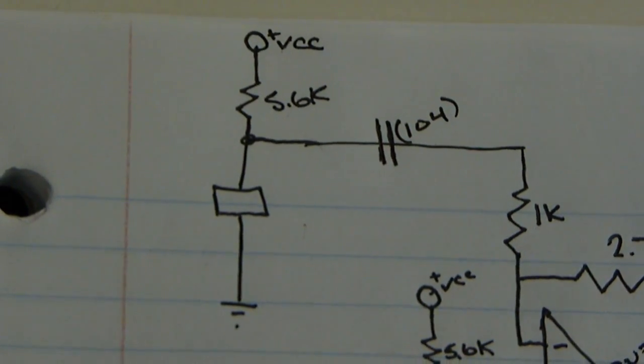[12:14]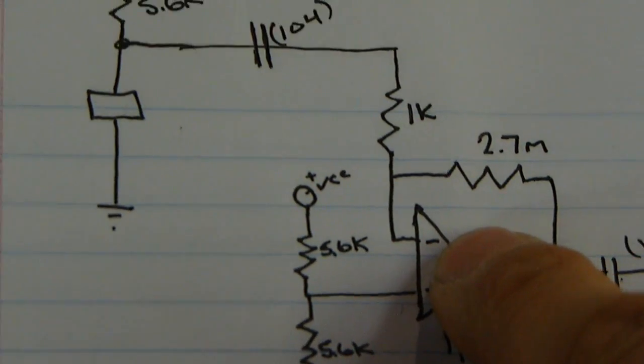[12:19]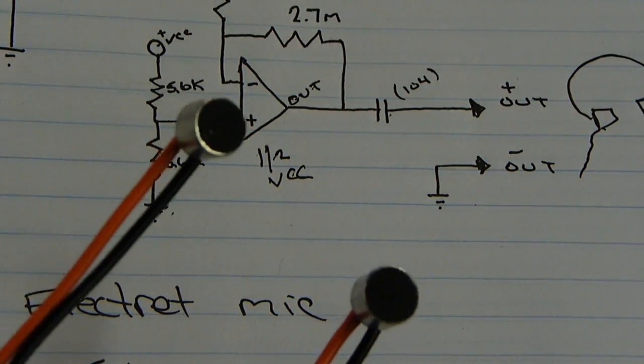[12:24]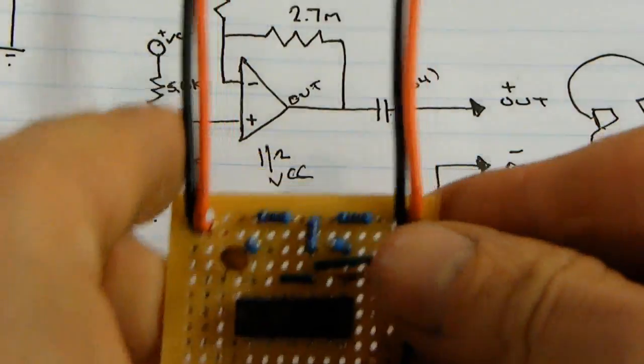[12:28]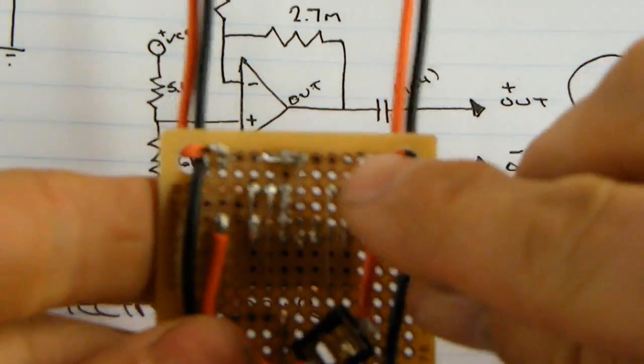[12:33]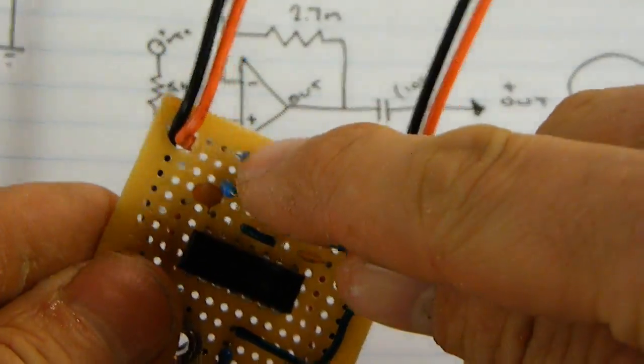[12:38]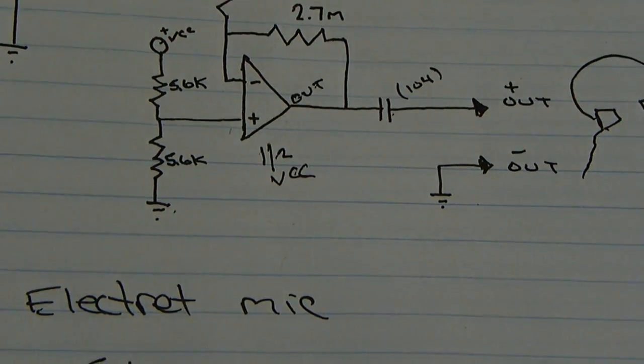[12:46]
However, now I think I'm going to start out with the electret mic and then work my way back towards the op amp as far as soldering components on the board. Okay, I have the electret microphones halfway soldered on, and the positive leads are connected to the resistors here and here. And those are going to be connected to the power source, which will connect to here, as you can see in the schematic.
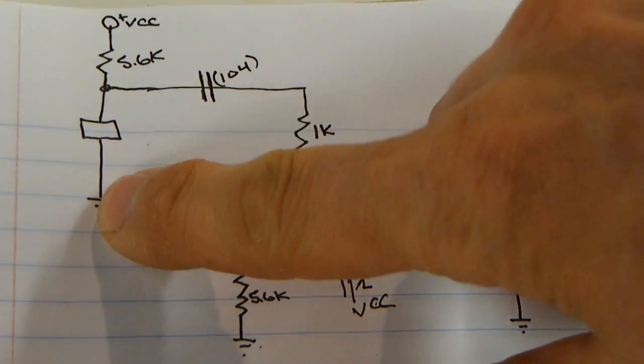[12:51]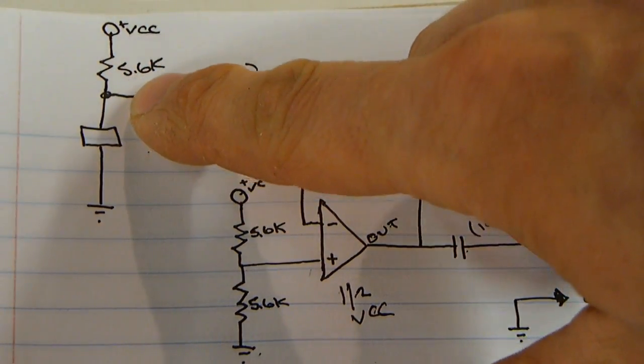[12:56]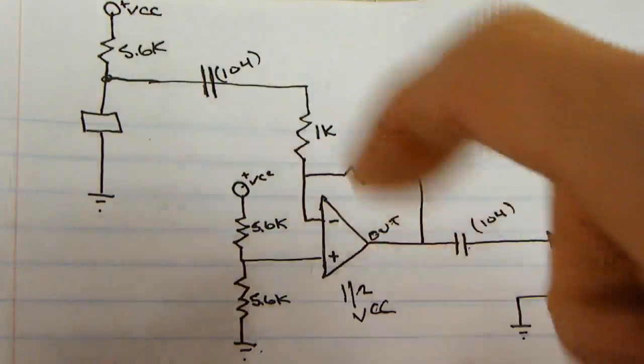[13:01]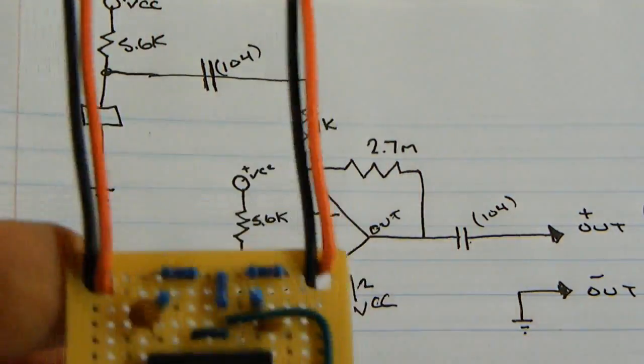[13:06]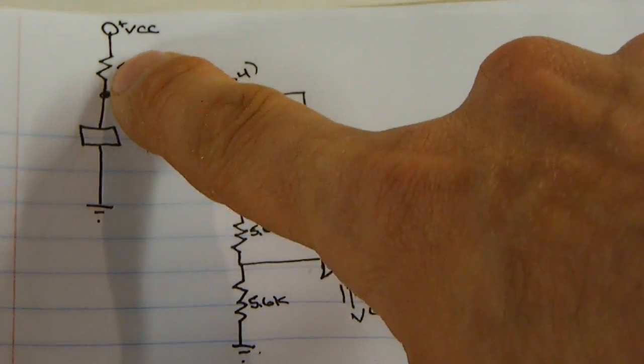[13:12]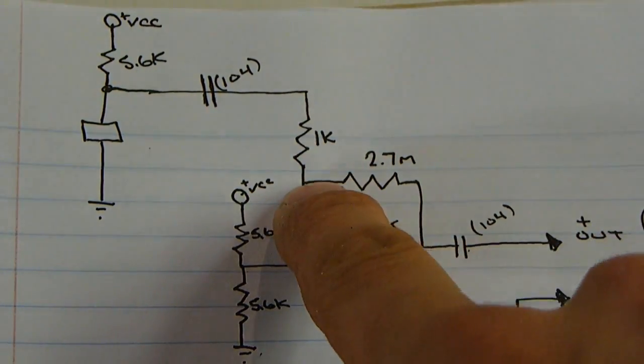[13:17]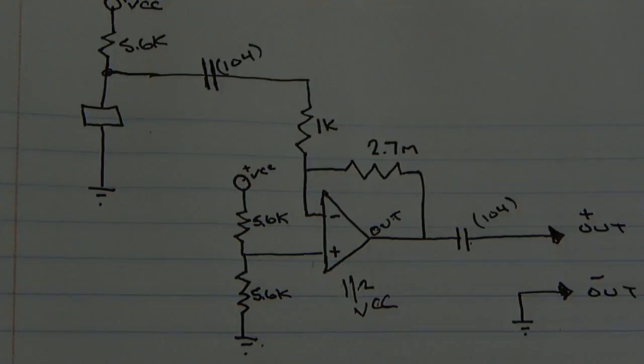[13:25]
The electret microphone, one end is connected to the ground, or negative terminal of the battery, and the other one is connected through a 5.6K resistor, that's these guys, to the voltage source. And these both are the 5.6K. Okay, so my next step is to tie a capacitor between the resistor electret microphone junction through a 1K resistor all the way to the negative in on the op amp.
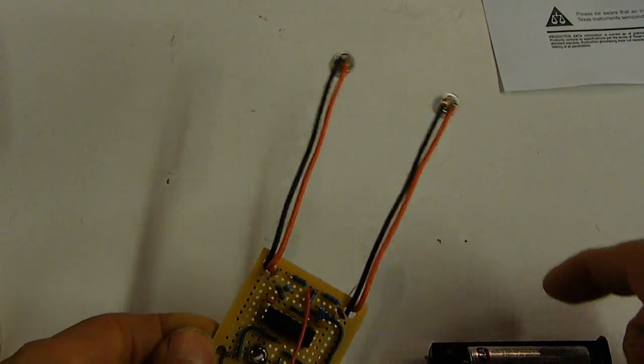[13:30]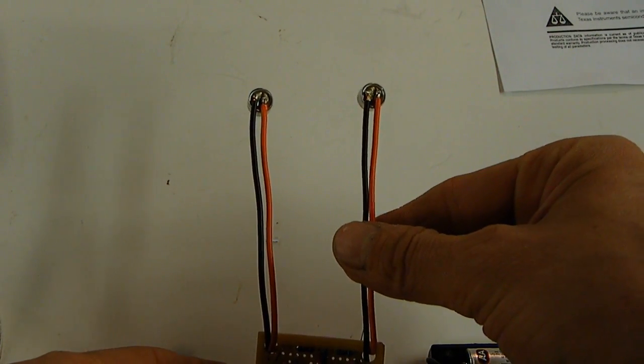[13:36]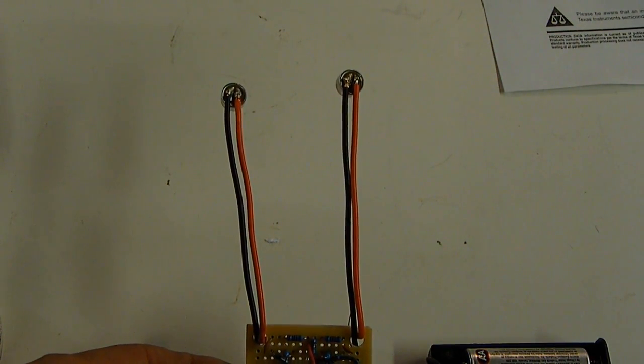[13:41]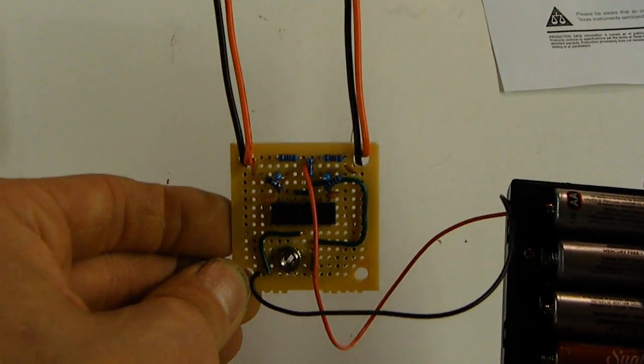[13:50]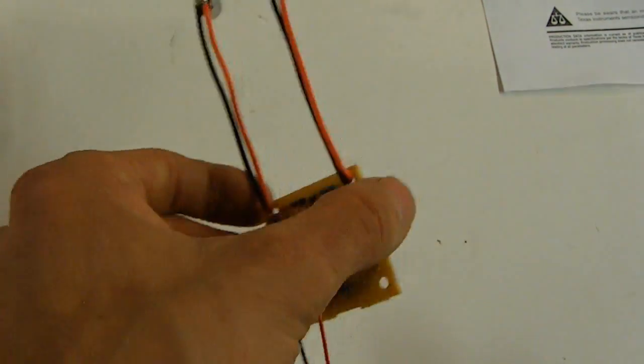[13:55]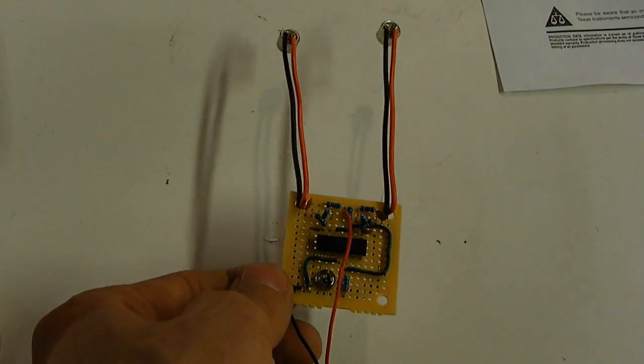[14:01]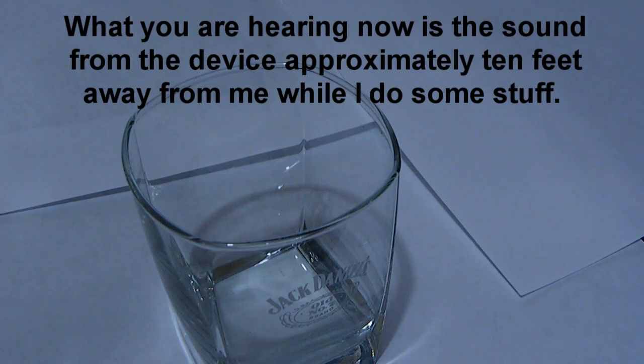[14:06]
Alright, so this is our completed project. The reason I have these not hardwired to the board, I forgot to mention, is just to reduce the noise that's going to come through the microphones while you're handling it. And these two wires do a very good job of reducing any shock when it comes to moving the object itself around. So our project is complete, so we're going to go ahead and plug this in. This is meant for earphones, however I have a little recorder I'm going to try and hook it to so you can hear what I hear. Now it's time to celebrate.